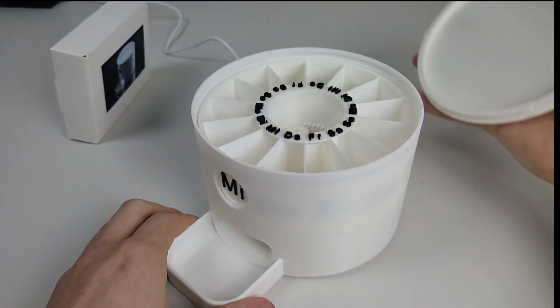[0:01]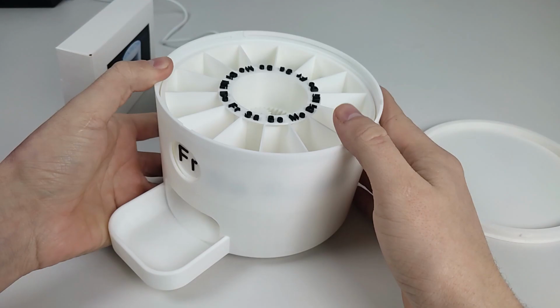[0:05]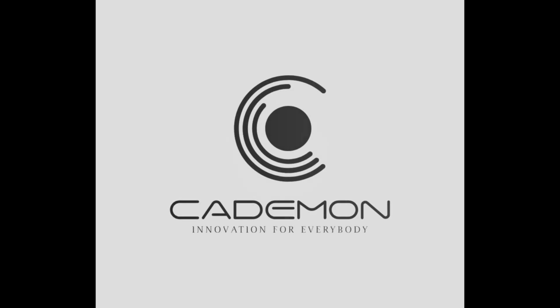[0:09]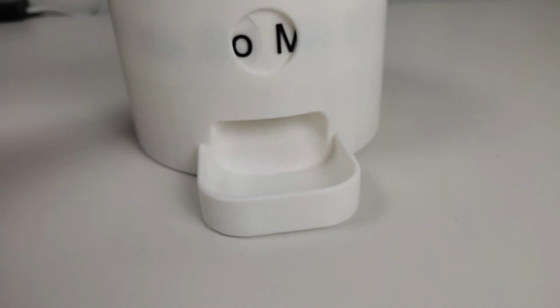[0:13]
Today, we're building an affordable automatic supplement and pill dispenser that you can easily 3D print at home. One press button starts the timer, and the tablets fall every day automatically into the tablet compartment.
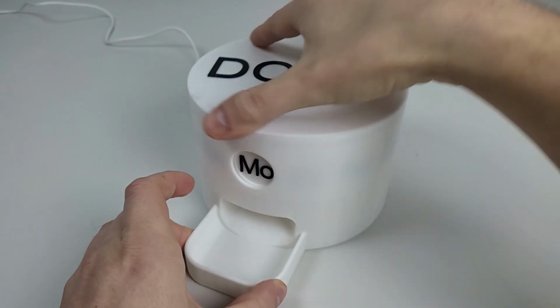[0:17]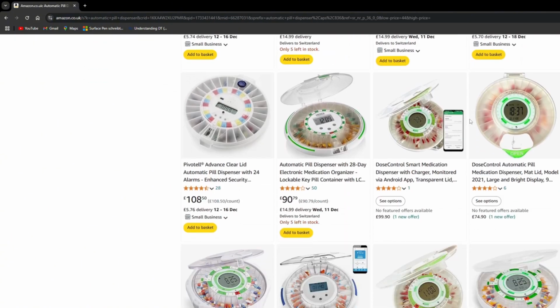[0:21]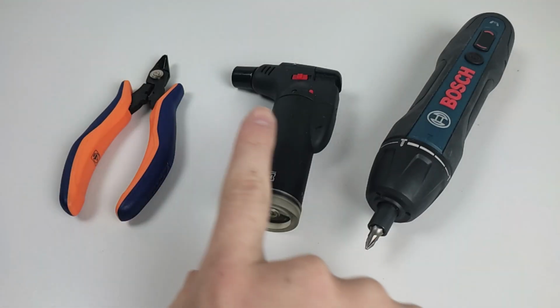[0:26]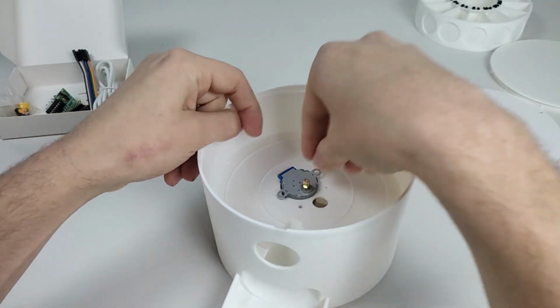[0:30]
I looked it up and was shocked at how expensive they can be. But then, I thought, why not build one myself just as good? The assembly is super easy and simple, so that you can recreate it in a relaxed manner, without any stress.
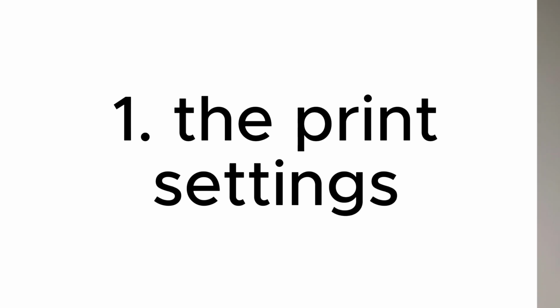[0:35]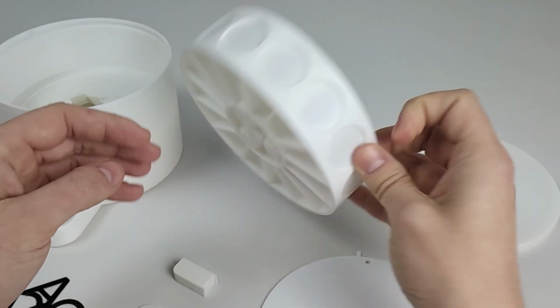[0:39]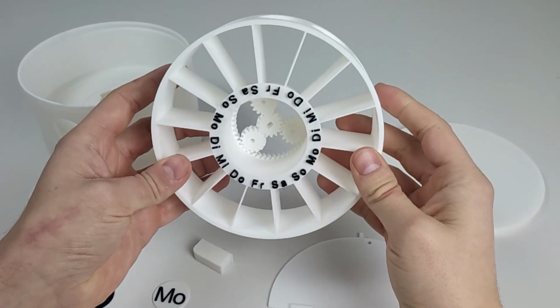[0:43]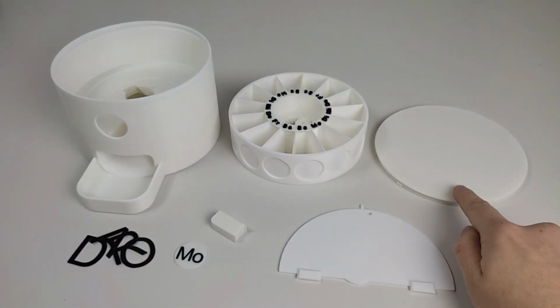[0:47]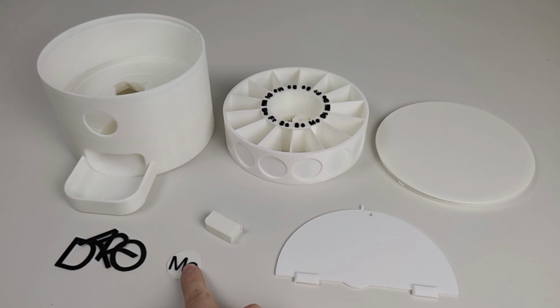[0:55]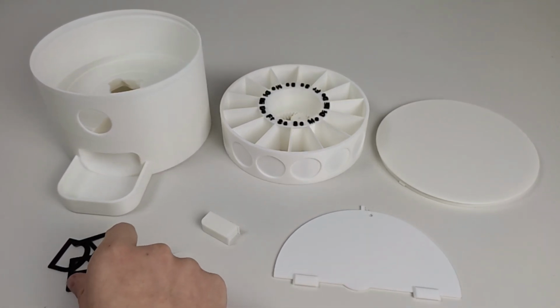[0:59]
You need the main body, the tablet compartment with the whole gearbox as print in place. One lid for the top, one lid for the technical compartment, a small holder for the push button, and small tags with weekdays or numbers. Optionally, you can print letters to personalize your machine.
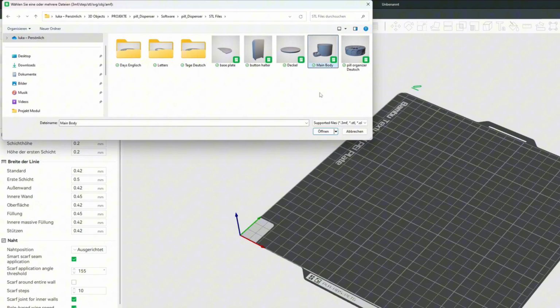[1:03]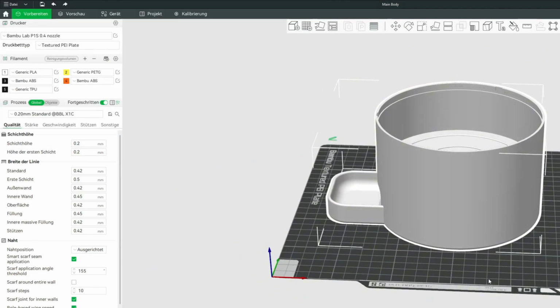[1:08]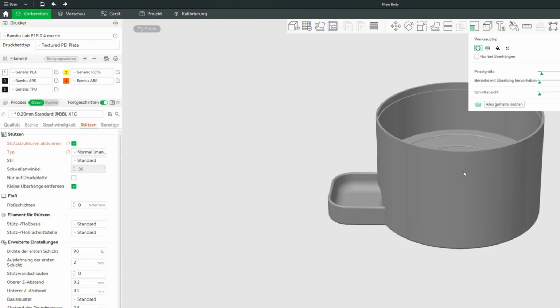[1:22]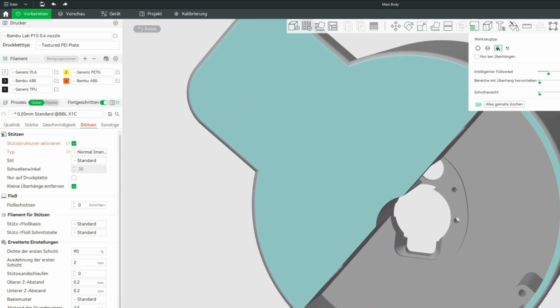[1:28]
I have the body printed with the standard settings of Bambu Lab, with an infill of 15%. Place the supports manually, as shown in the instructions, to save material. In Bambu Studio, select supports and set it to manual. Then you can use the small icon above to select the areas that must be supported. The instructions for the complete files and settings are linked down below.
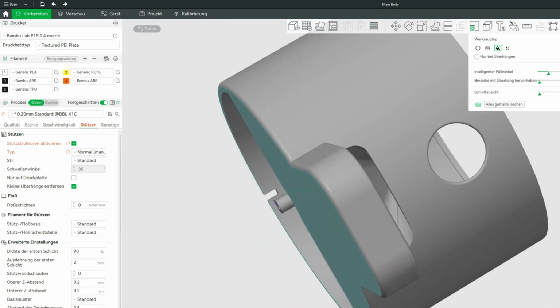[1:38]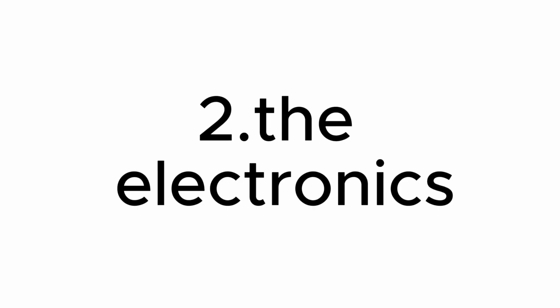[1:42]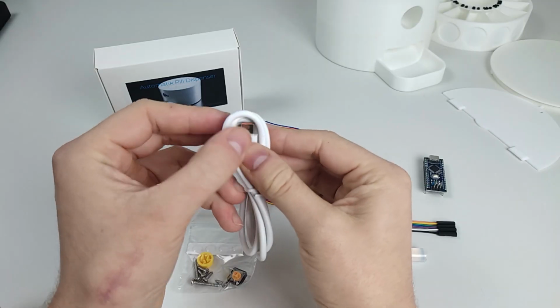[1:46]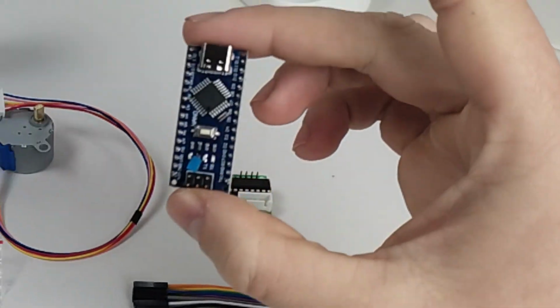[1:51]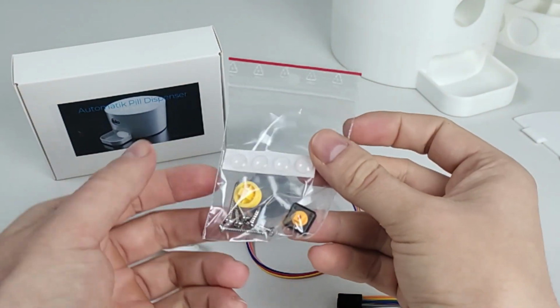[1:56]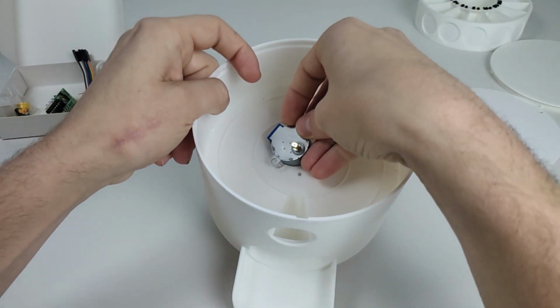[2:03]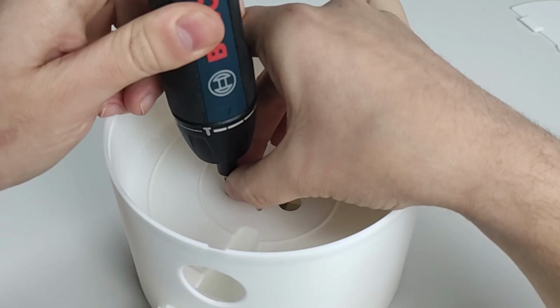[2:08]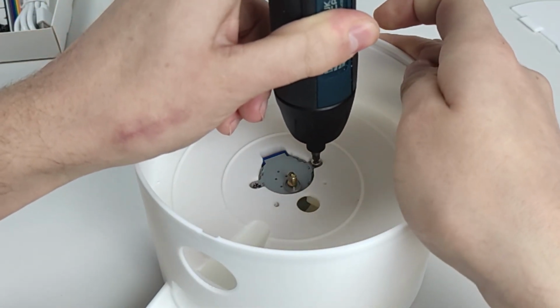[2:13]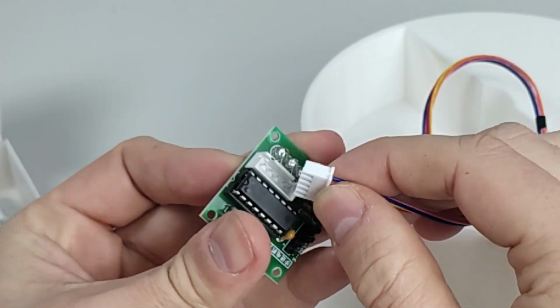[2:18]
Here is an overview of the parts you need. Insert the stepper motor into the main body and secure it with the two small screws. Connect the cable of the motor with the stepper module.
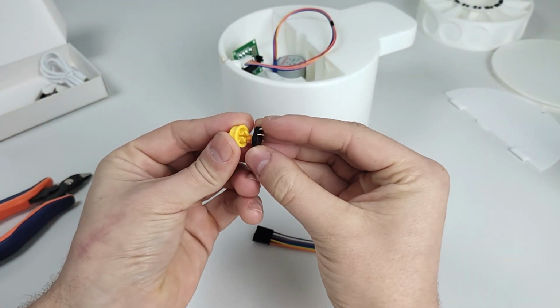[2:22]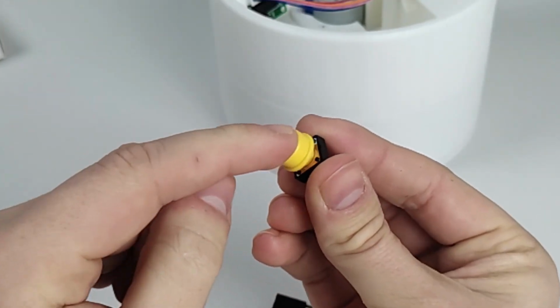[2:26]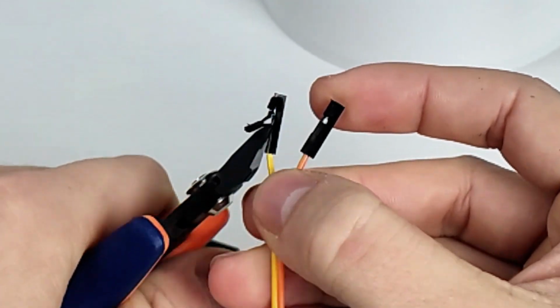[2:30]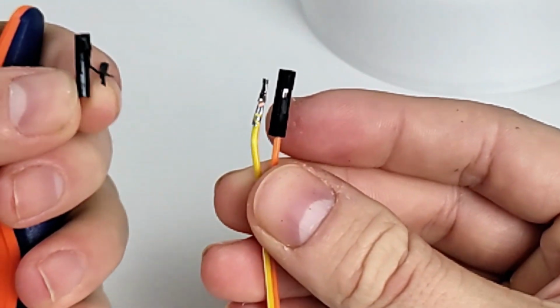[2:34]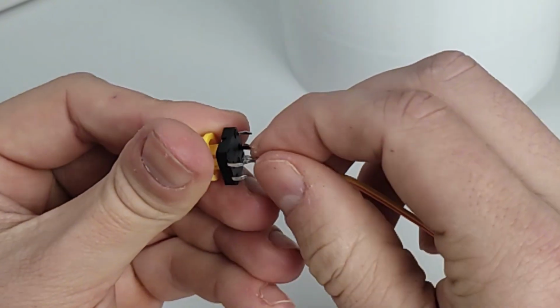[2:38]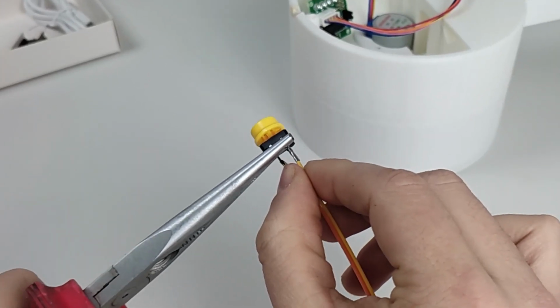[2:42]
Assemble the push button and test it. Remove the plastic at the end of the two jumper cables to expose the metal contact. Connect these jumper cables to two diagonally opposite pins. You can also simply solder the cables.
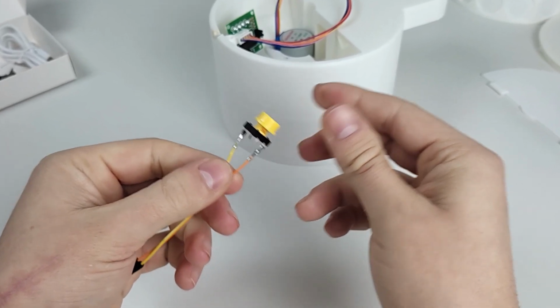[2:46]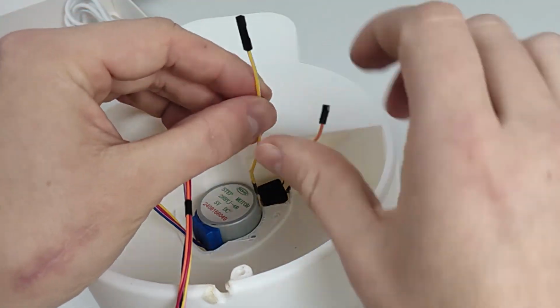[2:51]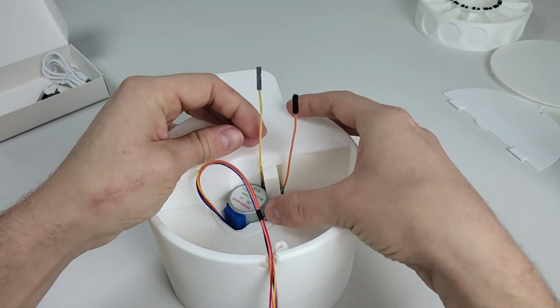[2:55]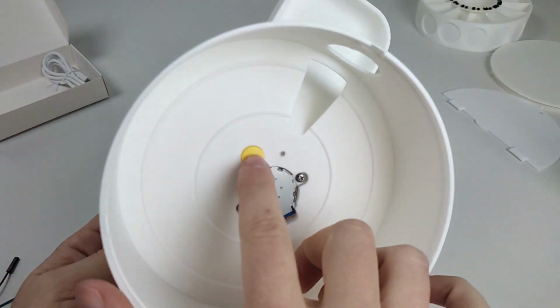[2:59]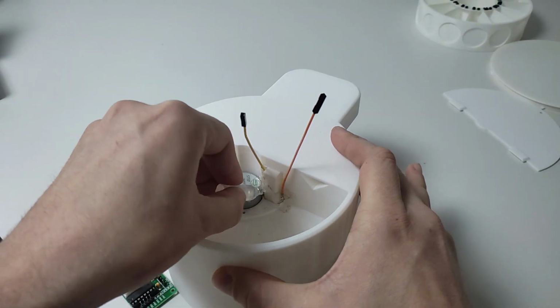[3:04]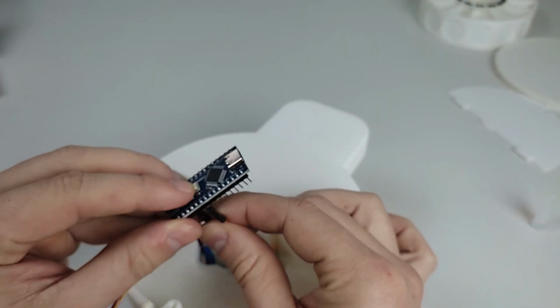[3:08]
Now place the button in the provided hole and secure it with the button holder. Test whether the button can always click freely, then secure it with hot glue. Connect the two cables from the button to your Arduino, one at ground and the other at pin D2.
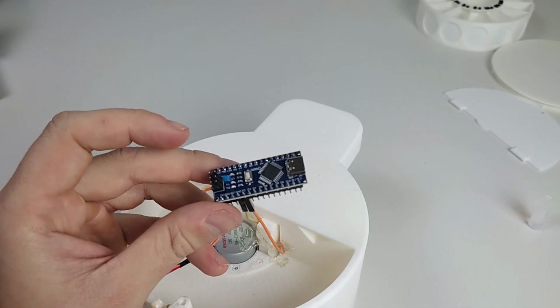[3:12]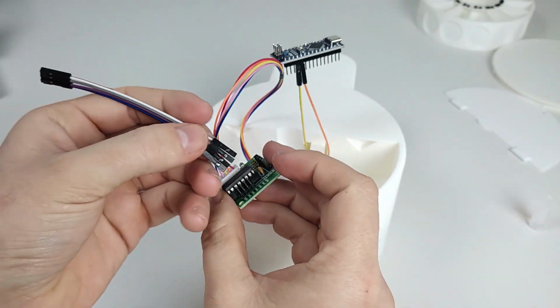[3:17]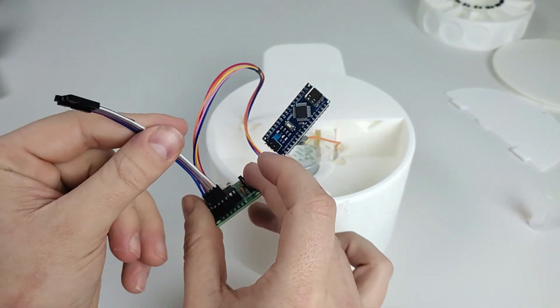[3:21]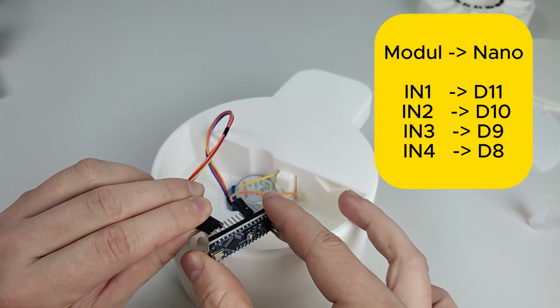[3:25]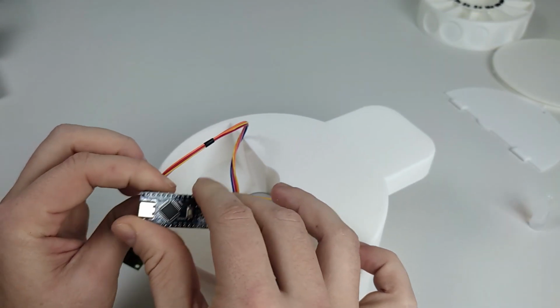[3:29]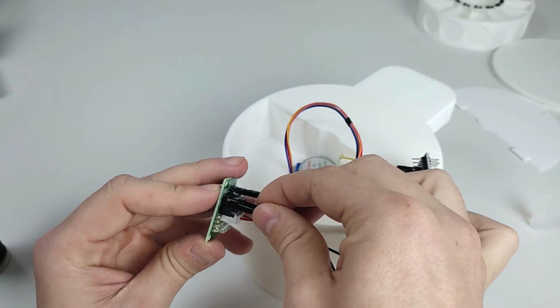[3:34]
Now connect the other jumper cables. Make sure the pins are connected: pin 1 to pin 11, pin 2 to pin 10, pin 3 to pin 9, and pin 4 to pin 8. Now connect the last two jumper cables to supply power from the stepper module to the Arduino.
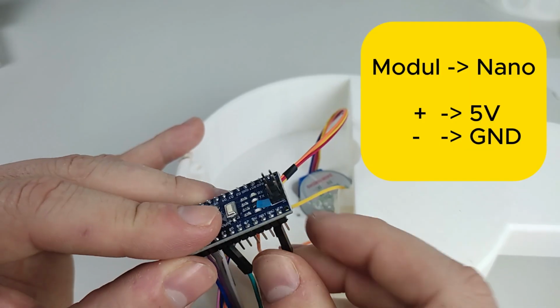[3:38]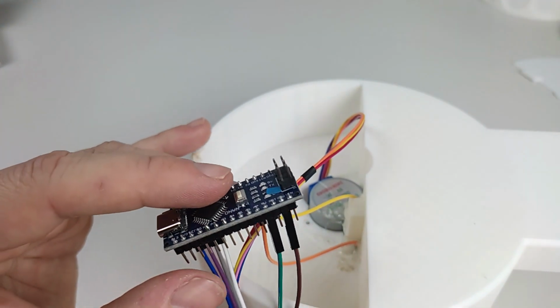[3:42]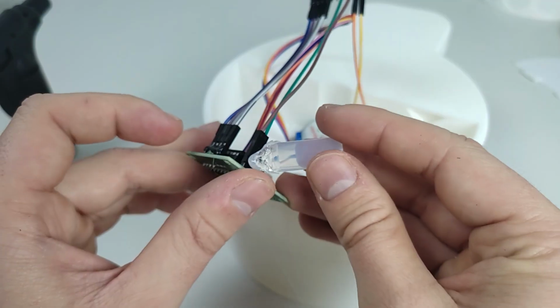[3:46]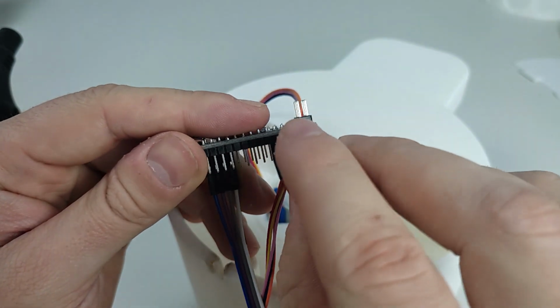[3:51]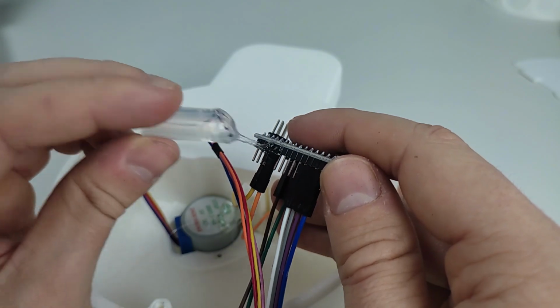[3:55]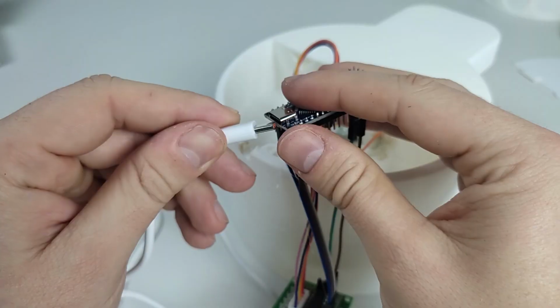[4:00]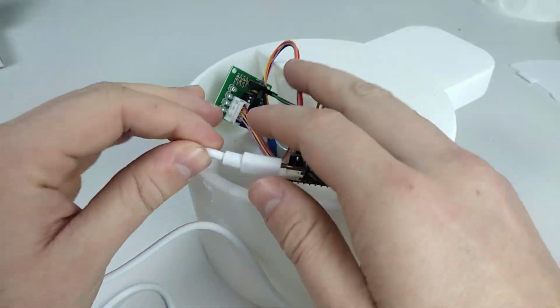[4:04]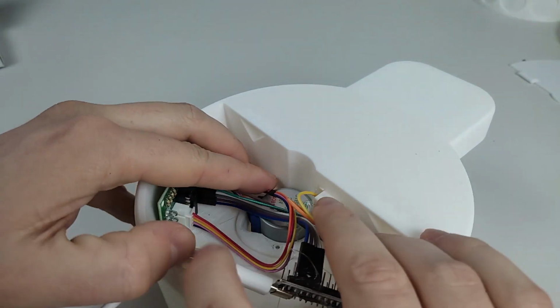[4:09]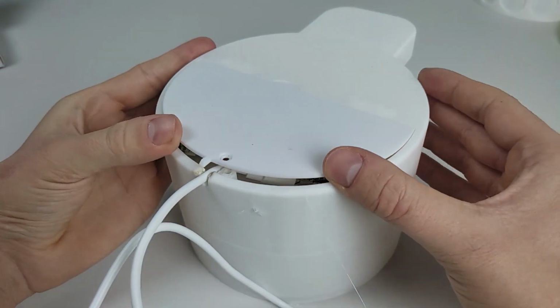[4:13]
Secure all connections with a bit of hot glue. If you're unsure whether you wired it correctly, test the Arduino first before gluing everything. Finally, connect the USB-C cable to your Arduino, and close the technical compartment with the lid and a small M3 screw.
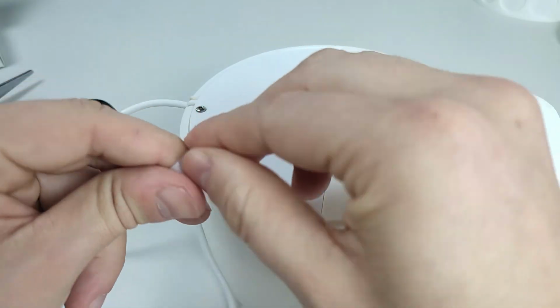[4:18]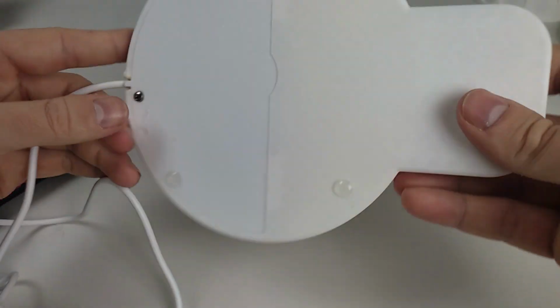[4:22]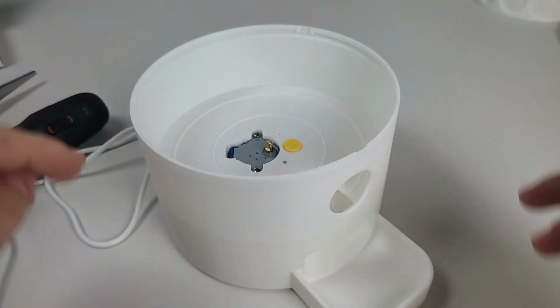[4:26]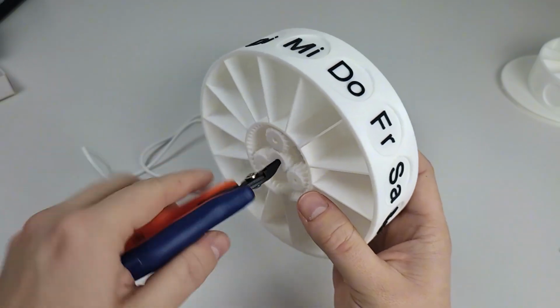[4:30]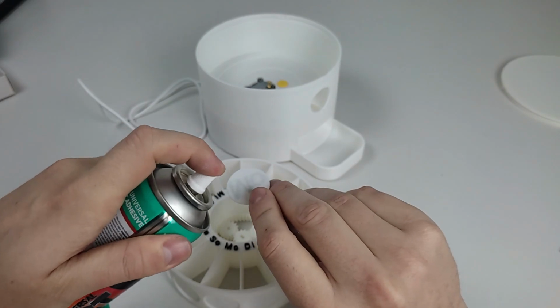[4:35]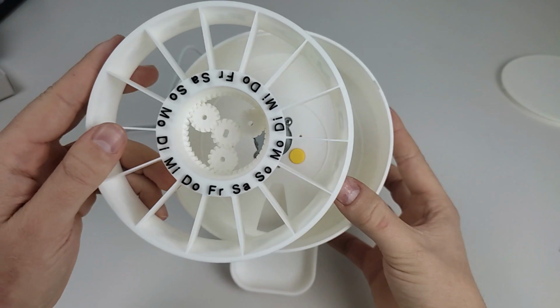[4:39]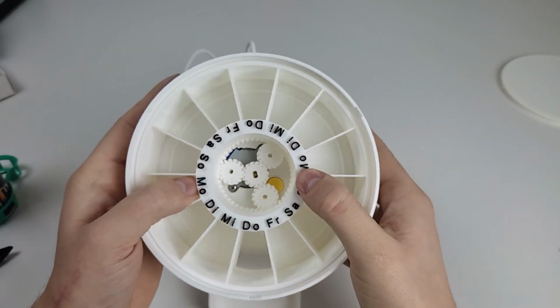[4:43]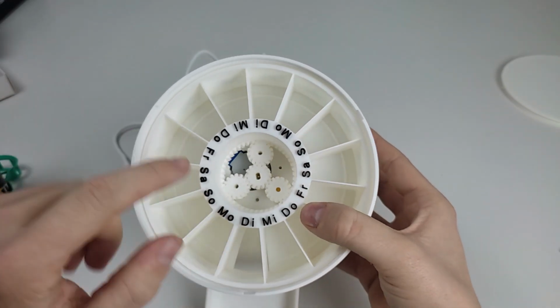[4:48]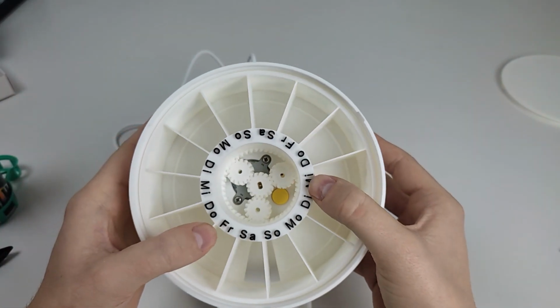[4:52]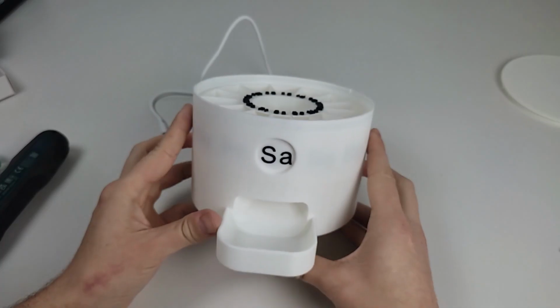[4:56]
Insert the pill compartment into the main base like this. The tablet compartment should be able to rotate freely. Secure the outer planetary gears to the base using the two long screws in the designated holes. Make sure not to tighten the screws too much so the gears can spin freely.
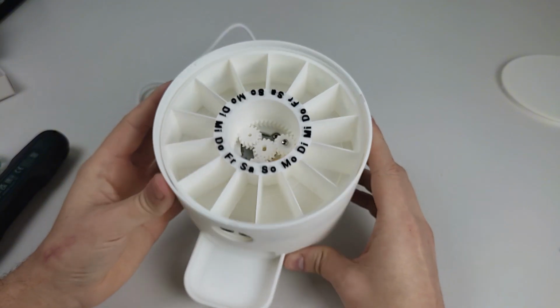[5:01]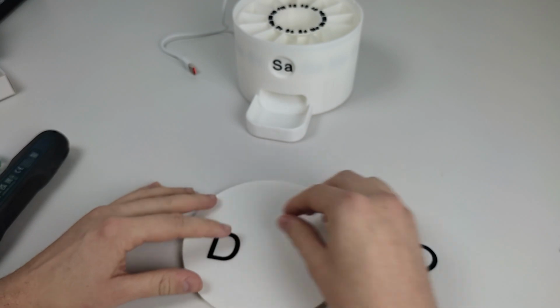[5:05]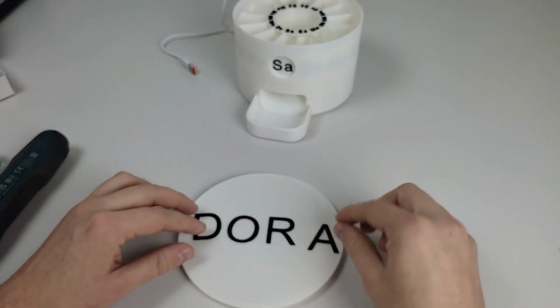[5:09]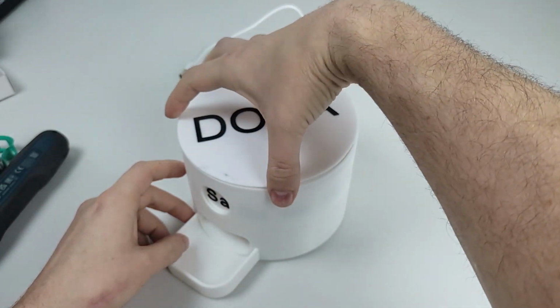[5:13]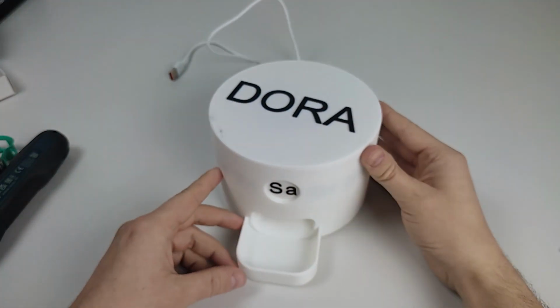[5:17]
You can now label or decorate the lid as you like. Letters and numbers are included in the files. Note the lid has a child lock, so if it doesn't open right away, don't panic, but how it works, you'll have to figure that out yourself.
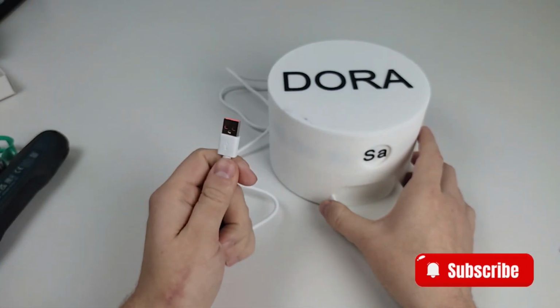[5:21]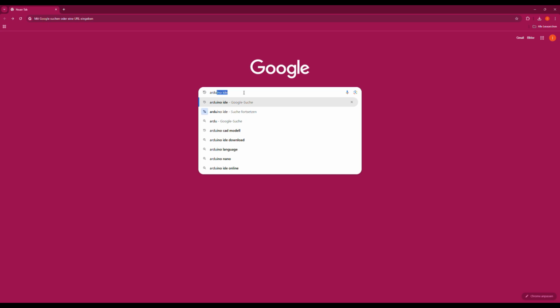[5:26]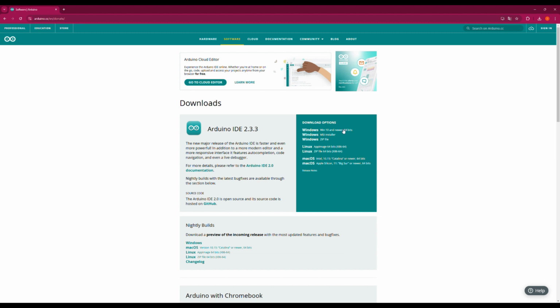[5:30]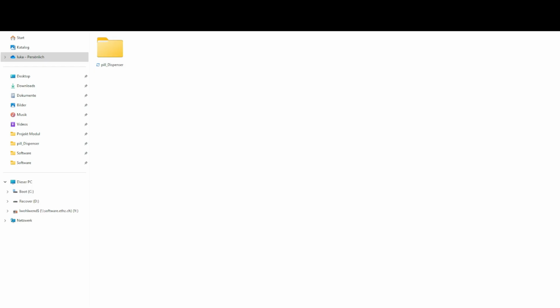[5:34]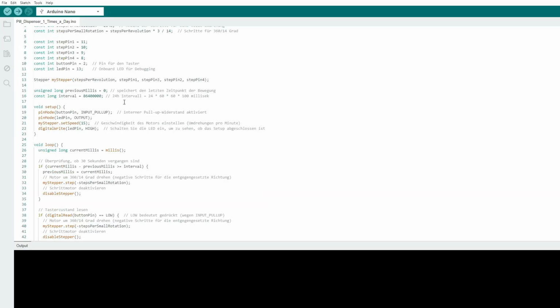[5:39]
Connect the Arduino Nano to your computer using a USB-C cable. Download the Arduino IDE from the official website. The link is in the description. After installation, open the code in the IDE. Choose between once or twice a day. Each program is commented for easy adjustments. Need help? Ask in the comments.
Select the correct processor by choosing Arduino Nano. Select the correct program and port, then test the program. For this, you click on the small checkmark above. Then upload the program to the Arduino using the small arrow button in the IDE.
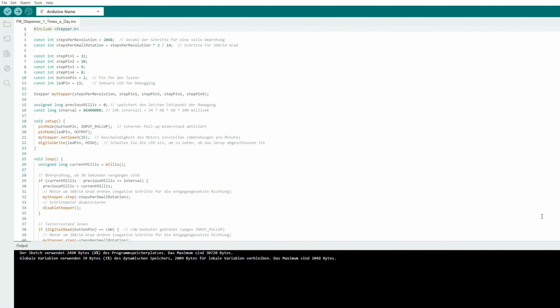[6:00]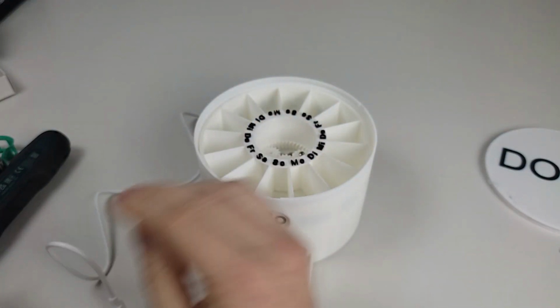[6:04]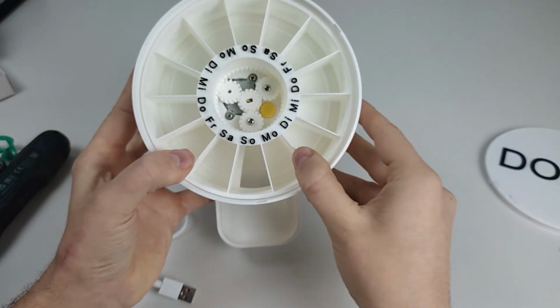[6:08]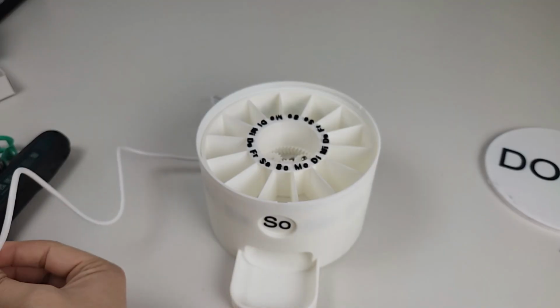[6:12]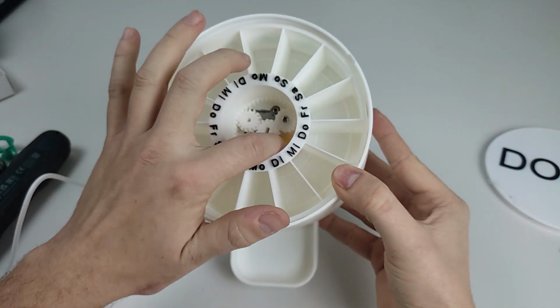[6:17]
Align the pill compartment with the front hole. Then connect the machine to a 5V power source. The motor locks itself once powered. Press the button, the motor moves one compartment forward and starts the Arduino timer.
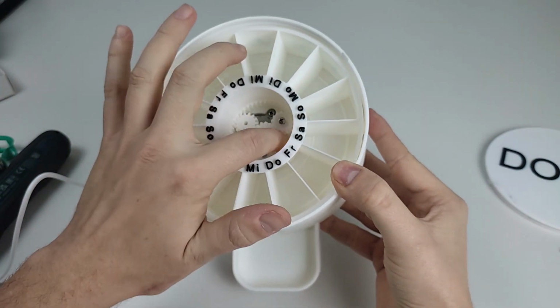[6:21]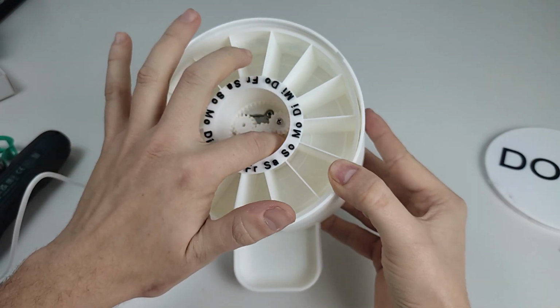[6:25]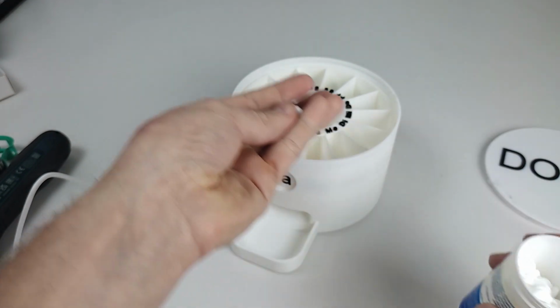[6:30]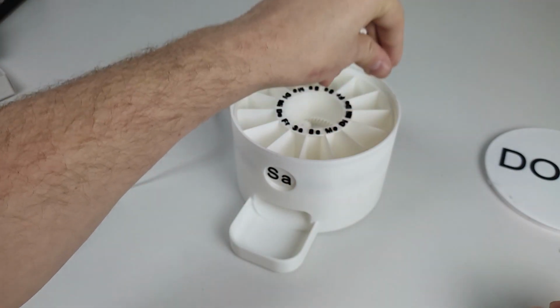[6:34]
From now on, it will rotate daily at this time or, with the other program, twice a day, once now and again 10 hours later. Adjust the time as needed. Test thoroughly before use and check alignment when refilling.